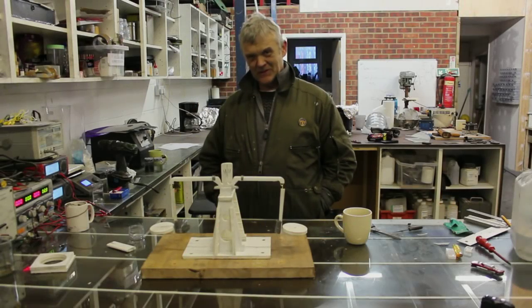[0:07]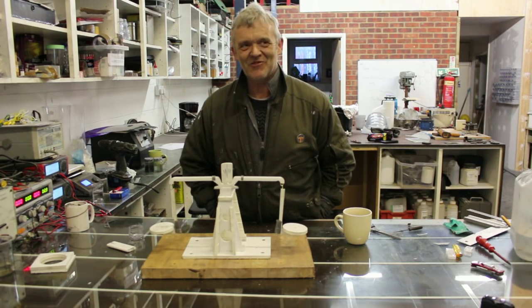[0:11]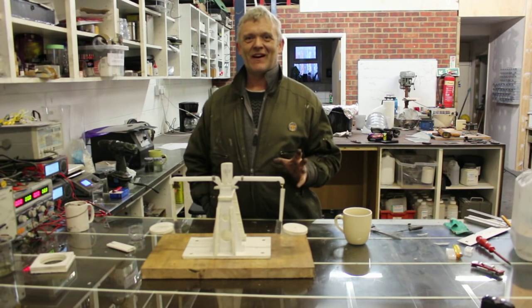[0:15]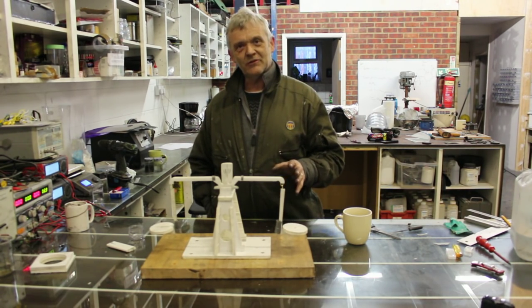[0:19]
Hi, so this was inspired by my friend Pete. Now, he's an Australian and he's a real problem solver. Actually, when I saw this, I was so impressed by it, I thought, hey, we've got to redo that, really. And what he did was get a couple of cups and tie them onto a bit of string. And don't knock it, it worked.
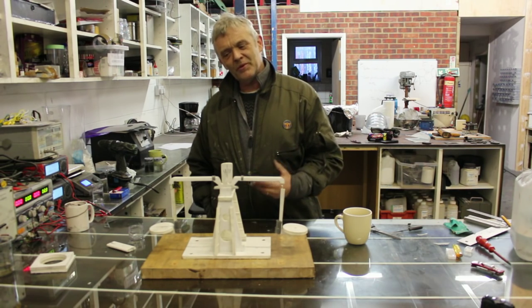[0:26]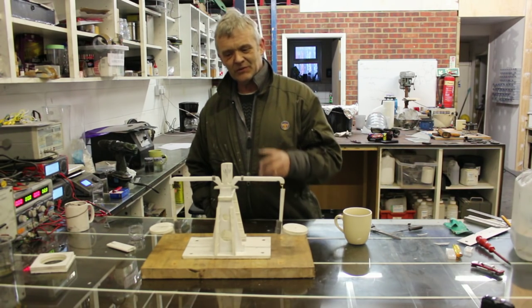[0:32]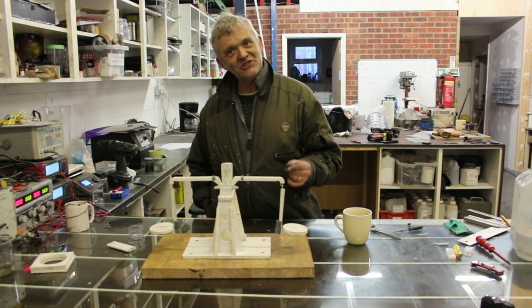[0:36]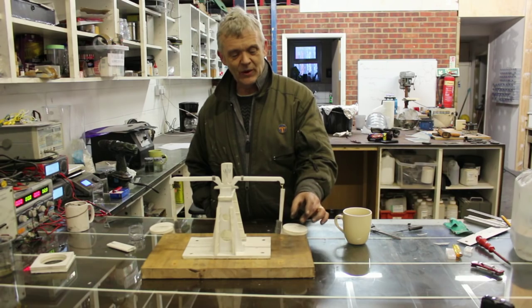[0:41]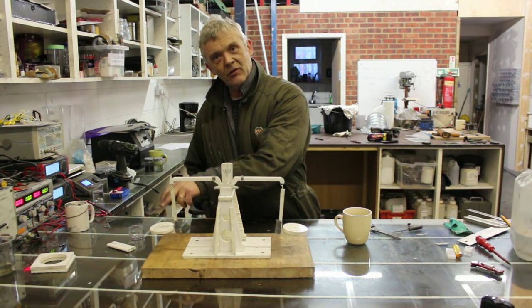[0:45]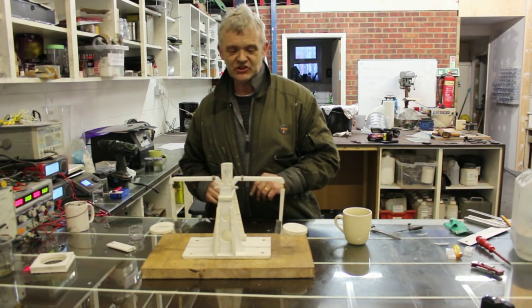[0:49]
And I thought, what would be nice with that is if we made something a bit sturdier and a bit more long-lived and a bit more lab equipment. So what we've got here is actually a balance, and it's really good for measuring small weights. Now, what you do, obviously, is put your known weight here, and you measure out your unknown weight until the two balance, and then it swings back into this middle position.
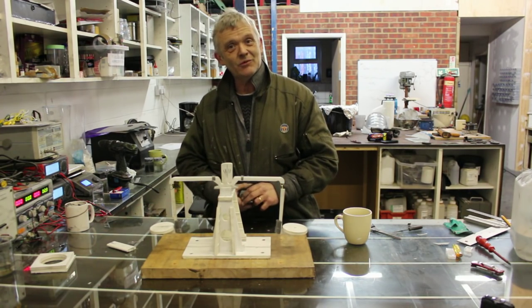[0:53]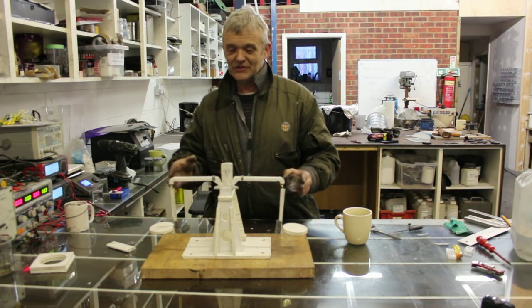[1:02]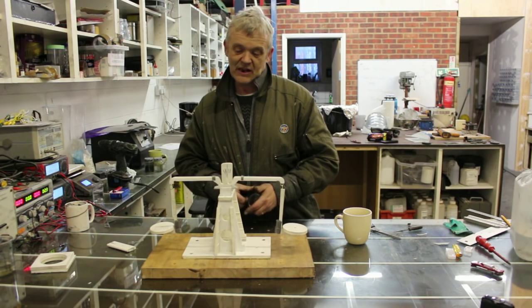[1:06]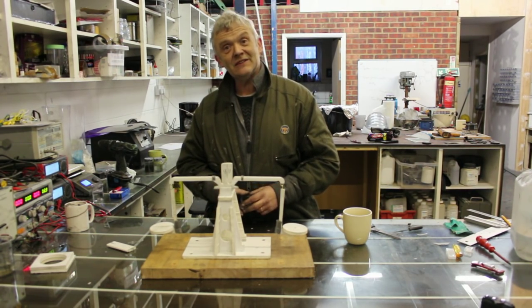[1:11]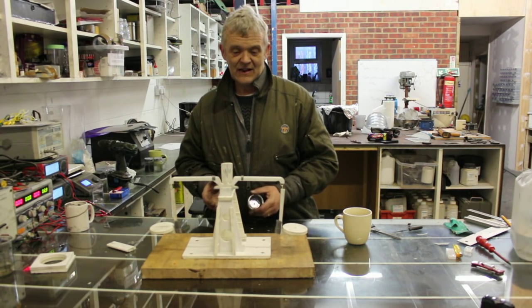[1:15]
Now, what he used, and I thought it was amazingly clever, was water. Because, of course, water is really 1 gram per milliliter. So you can measure down to tiny, tiny amounts using something like a balance. Now, this is quite large. It'll measure probably 50 grams or so. Accuracy, my guess, is 0.1 gram, plus or minus, something round about there.
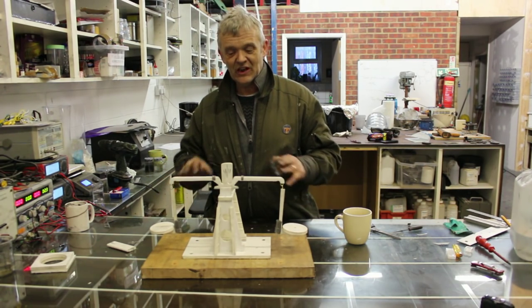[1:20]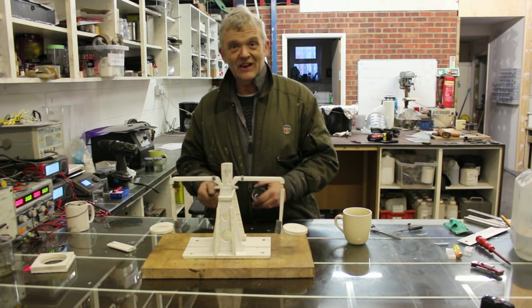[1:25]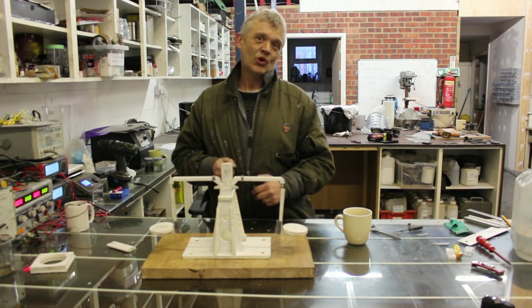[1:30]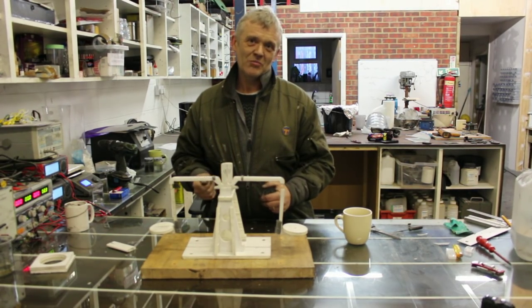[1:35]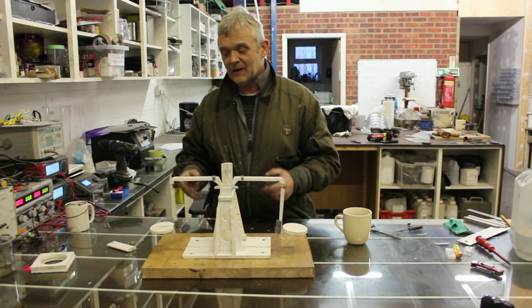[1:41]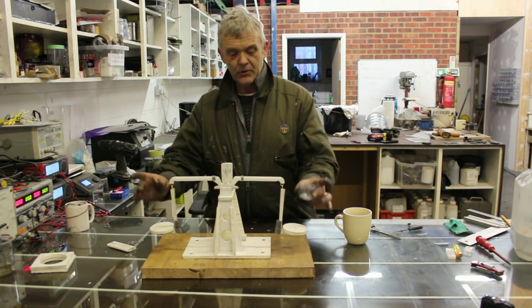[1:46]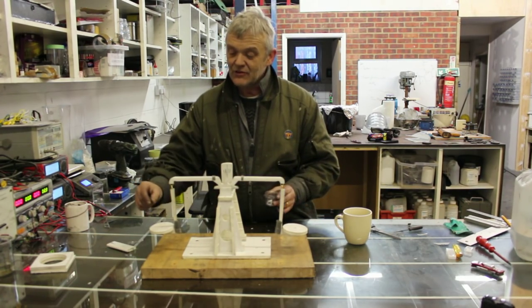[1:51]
So I constructed this, and we're going to go through the rest of the video on how to construct this. It's quite a large one, but you can build smaller ones and more delicate ones to measure tiny, tiny bits. The key bit, and what I'm taking from Pete, is the idea of using water. Water is effectively a known weight by volume, pretty much, good enough for us anyway. And I thought that was such a cool idea that what we could do with it is construct a balance and get a couple of cups of the same, put them on each side, and then when you balance it again and put water in one, you'll have to add your material to the other cup until they balance.
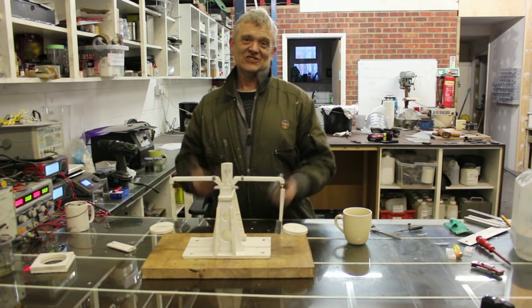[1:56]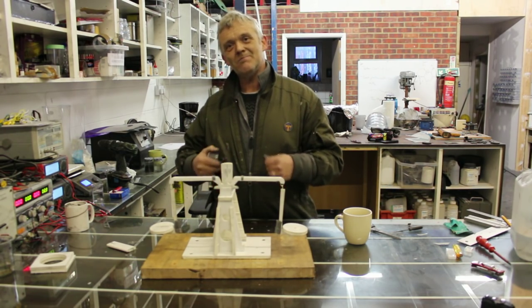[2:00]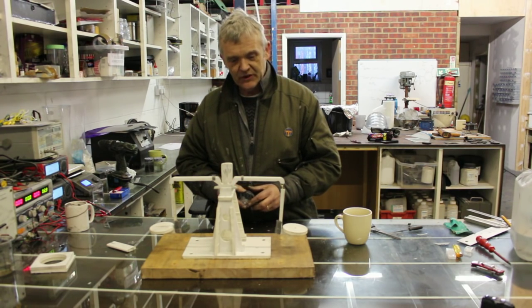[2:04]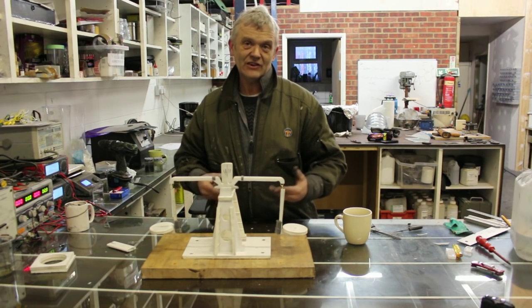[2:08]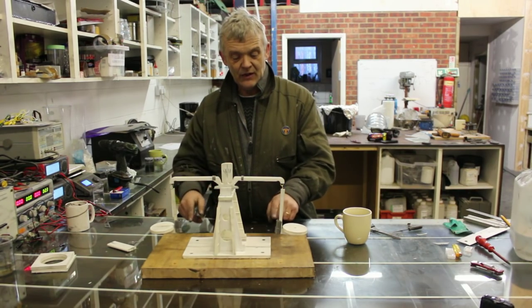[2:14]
And I just thought that was clever, and that we ought to beef it up a little bit into a bit more of lab equipment style stuff. So this is what I made. Now, you'll notice several things about it. These lead weights here, for instance, I used sheet lead, because I've got some. You could use steel, you could use car wheel weights, anything really. They hang here so that these pans, which are going to take the actual weight, swing out and are relatively level, and you just keep adding weight until that happens.
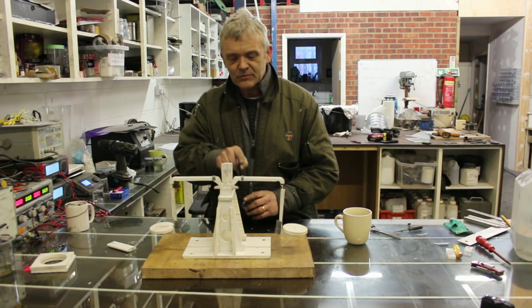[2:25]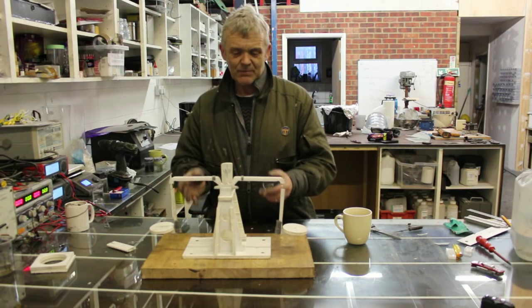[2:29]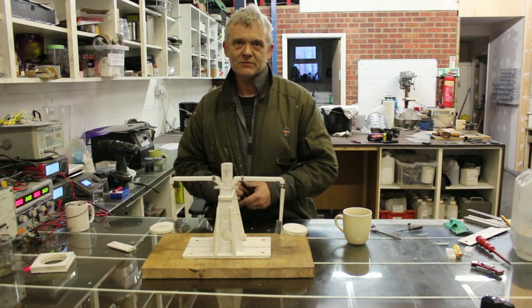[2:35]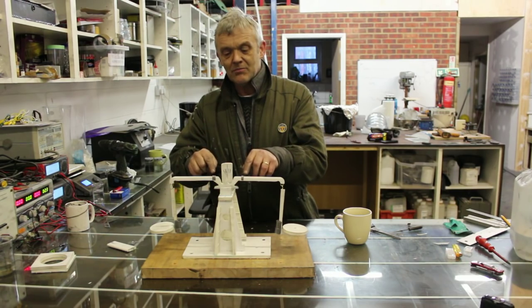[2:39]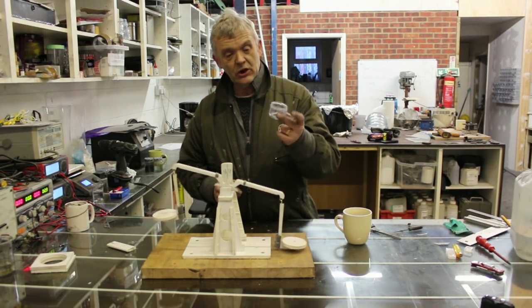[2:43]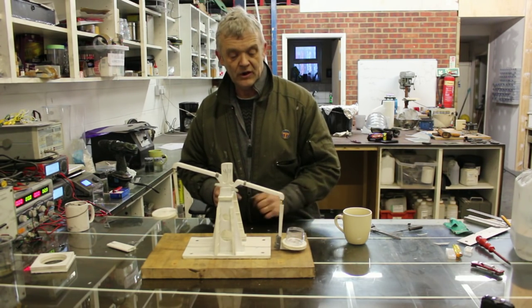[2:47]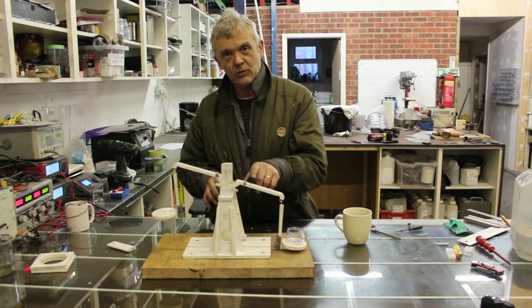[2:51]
You'll notice a couple of little strips of lead here, and that's so that I can balance the balance. When I put the whole thing together, it's unbalanced, so sliding these weights up and down the arms gets you to a point where it's balanced. So when you've balanced the whole thing, then you can either put a pencil mark so you know where to go, or crimp those weights down, because these cups are going to be slightly different weights. So when you put a cup on and you put another cup on there, it's not going to be imbalanced. So sliding those weights will allow you to balance your balance.
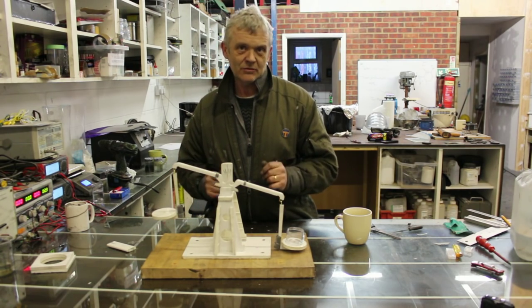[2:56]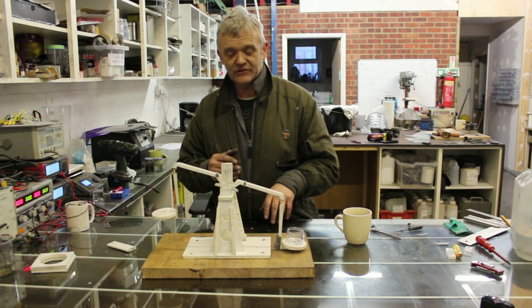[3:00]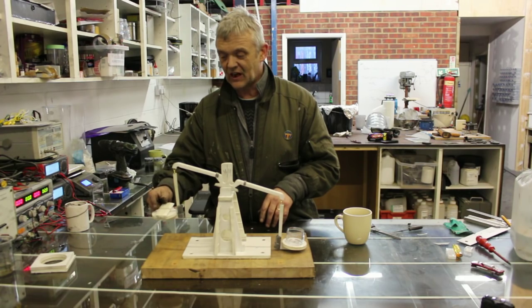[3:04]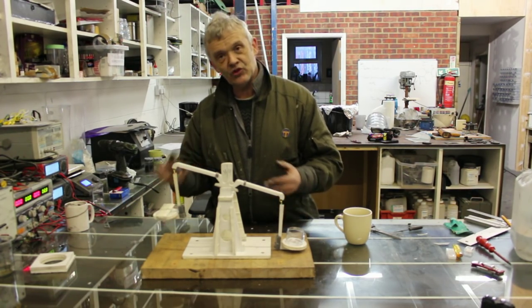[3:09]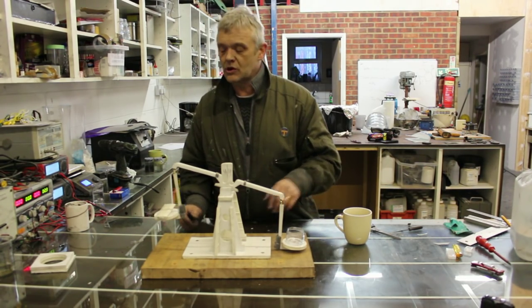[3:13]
Now, it's incredibly sensitive. Any little weight you add on there is going to go out of balance, until you add the appropriate approximate weight on the other side, when it will go back into balance again, and it'll keep doing that until you balance it up. The only trick is having a known weight on one side so you know what the weight of your material is on the other side.
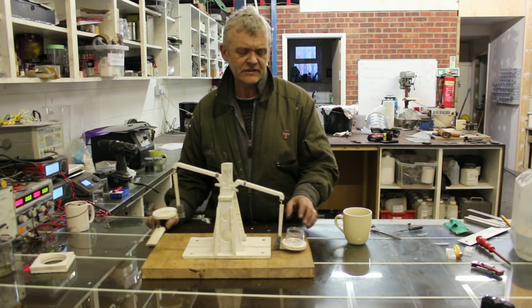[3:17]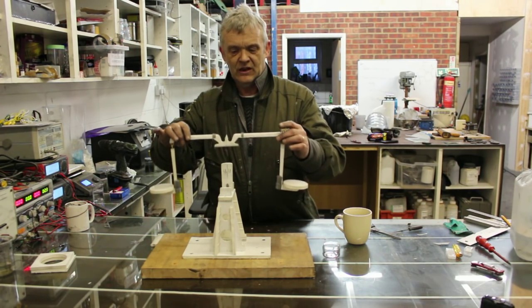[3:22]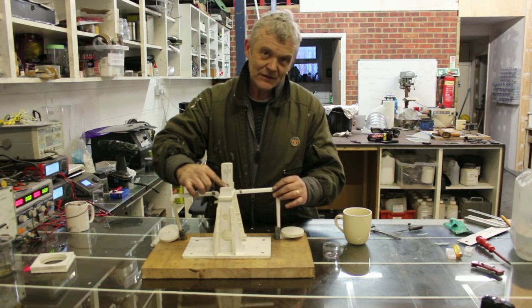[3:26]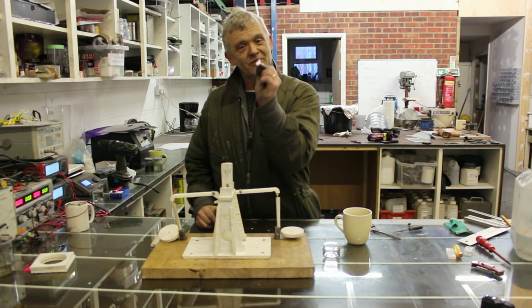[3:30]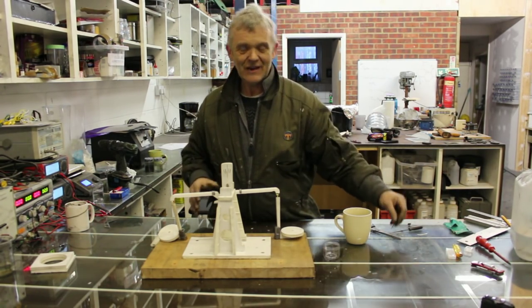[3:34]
Now, it's pretty easy to make, actually. It's made from something called builder's board, which I love. We take off the swinging armature, and here is the balance point. It's actually one of these. So one of these is put that way around, and that's a very fine edge, and the whole balance balances on it. Okay, let's go and make one.
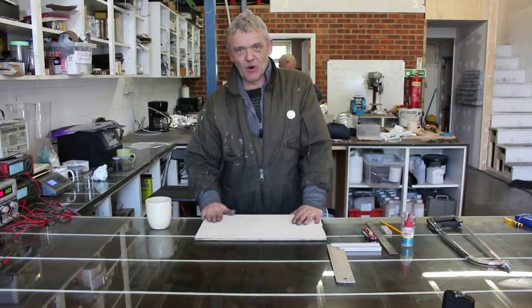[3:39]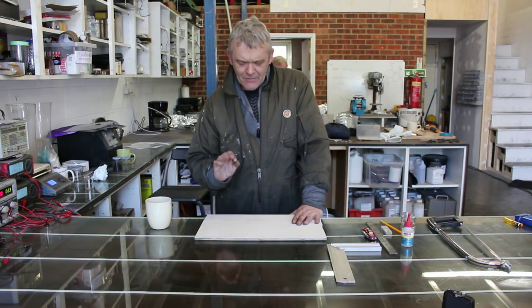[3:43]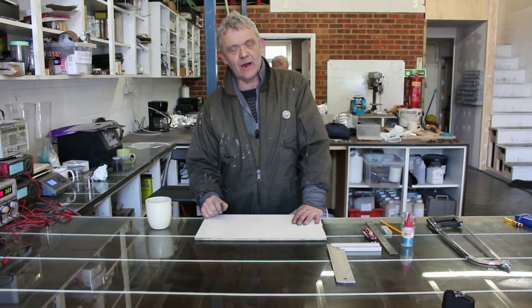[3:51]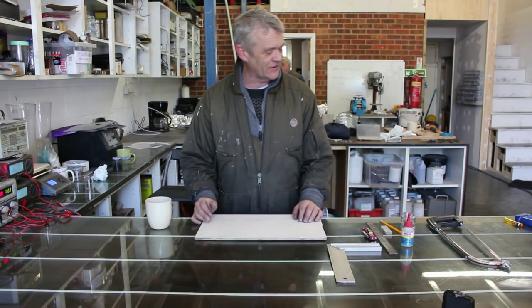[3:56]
So here is the builder's board. Now, I love this stuff. It's PVC with a foam core. And that means it's incredibly dimensionally stable. Do anything with it and it stays the way you made it. Machine made, so a nice square edge here and here, you can use it as a reference square, and it cuts with just about anything. I haven't tried biting it, but I'm willing to bet you can.
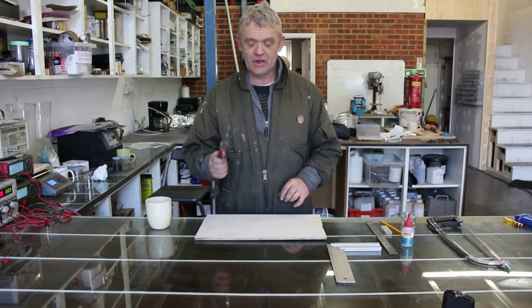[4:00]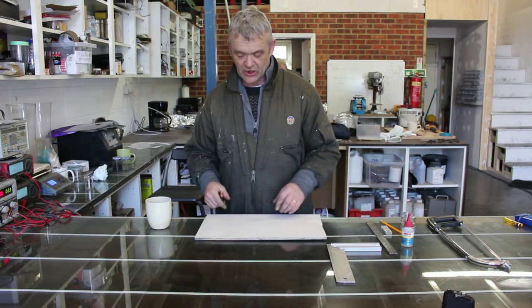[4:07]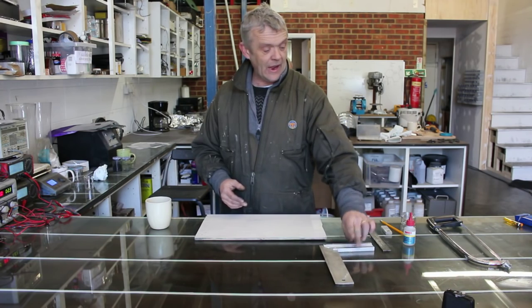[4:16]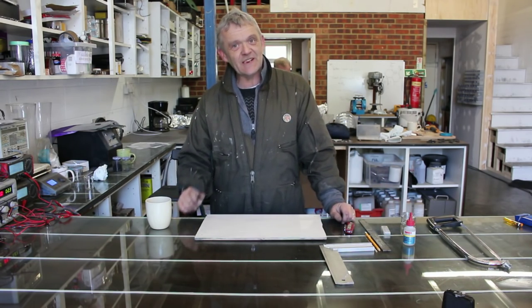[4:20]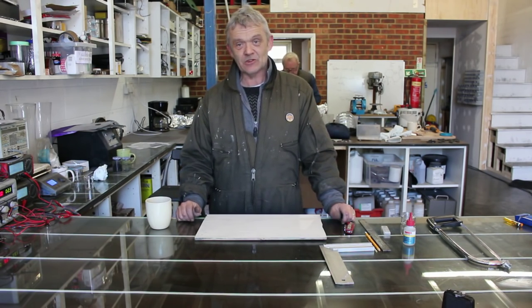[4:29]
But one of the best things to cut it with is this thing, which is just a carpet knife. Cuts beautifully, 3 or 4 scores, it will be through there. You can buy this in a whole range of lengths and widths and thicknesses. This one's quite thin, and it's just an offcut that I had lying around for this project. So all you really need is one of these, a ruler, a square, and a pencil. And you can do it with just those basic tools. It doesn't hurt if you have a few more, like a drill and a hacksaw. Certainly doesn't hurt. Now, the first thing we need to do is to mark out the bits and pieces that we need and to cut them out. And that's what I'm going to do.
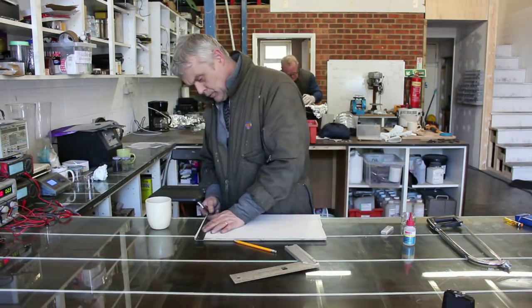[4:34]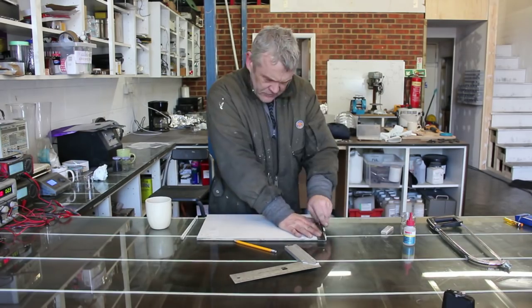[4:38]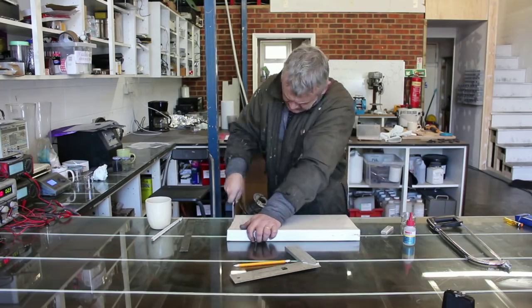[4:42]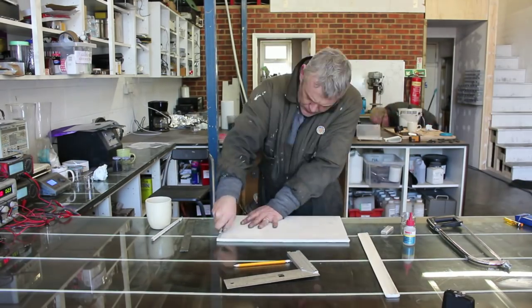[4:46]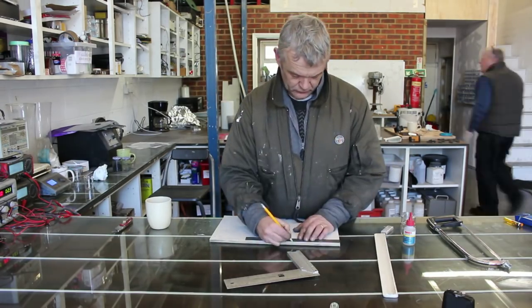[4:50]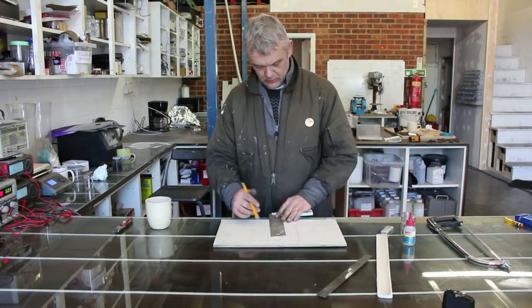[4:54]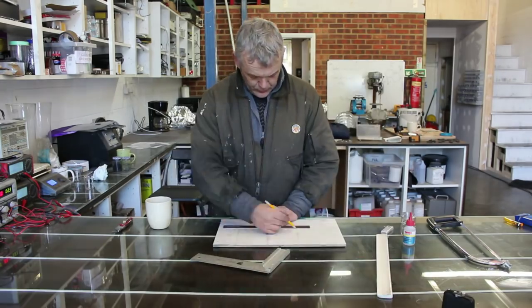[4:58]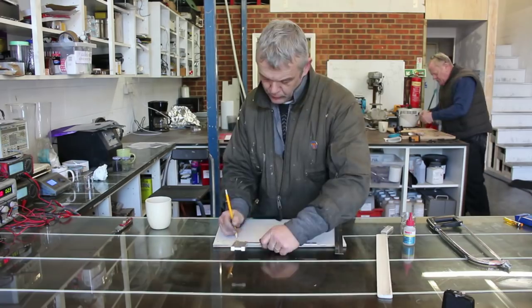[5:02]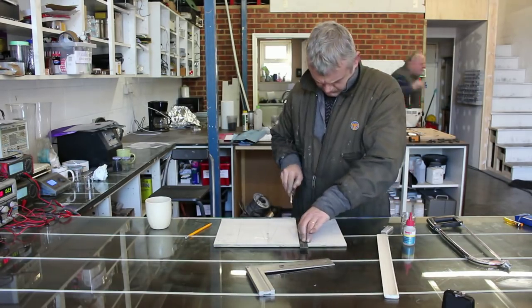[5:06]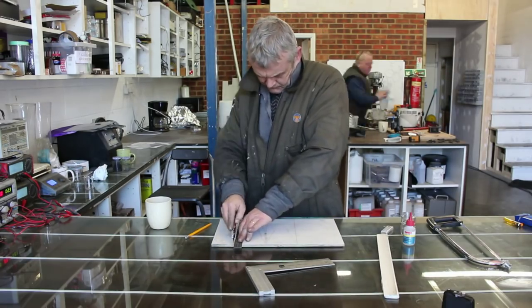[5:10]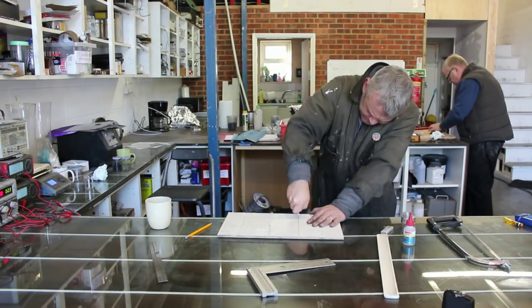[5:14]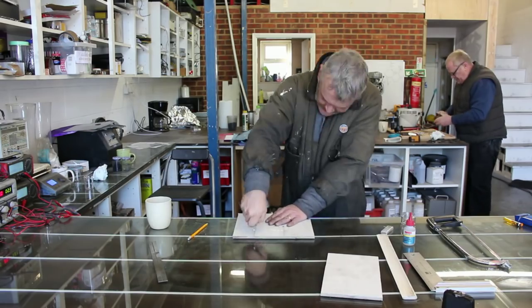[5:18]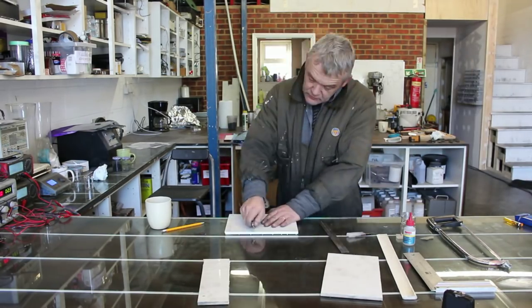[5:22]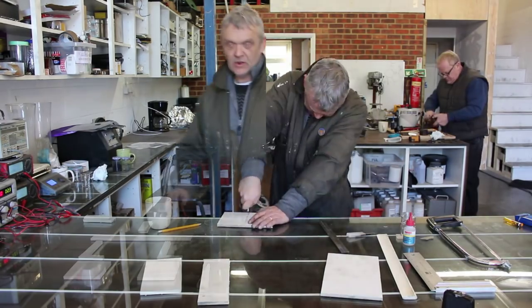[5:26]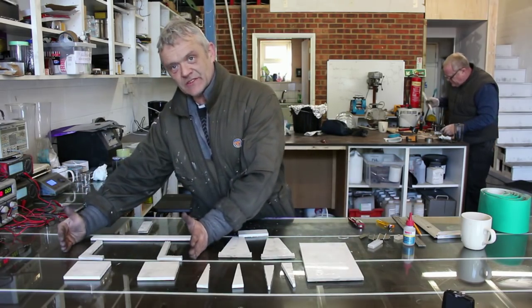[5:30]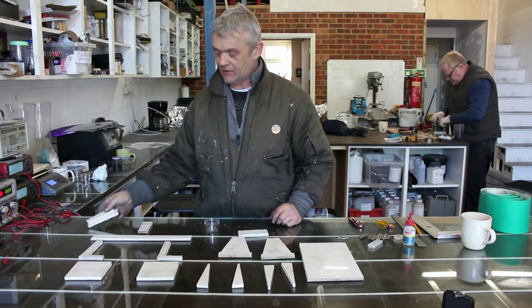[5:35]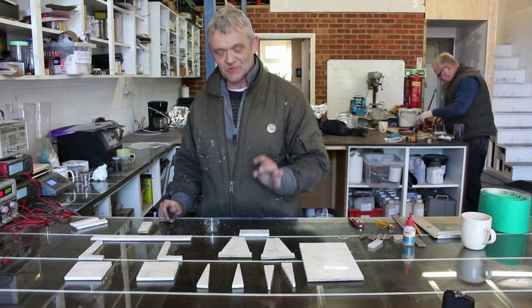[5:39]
There's all the bits cut out. We've got a base unit, and we've got a balance arm with some balance pans and a little indicator here, and this is the scrap we've got left over from it. Now, the other good thing about this stuff is it sands really, really easily. So we can sand all this and make this look pretty, and that's what we're going to do.
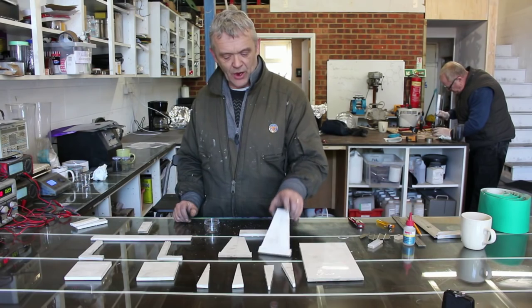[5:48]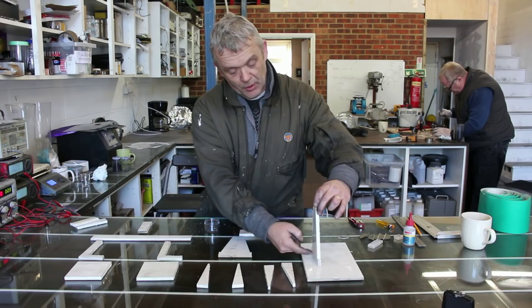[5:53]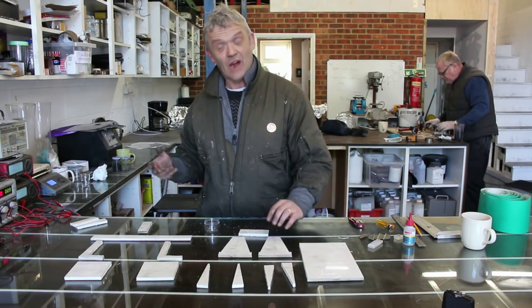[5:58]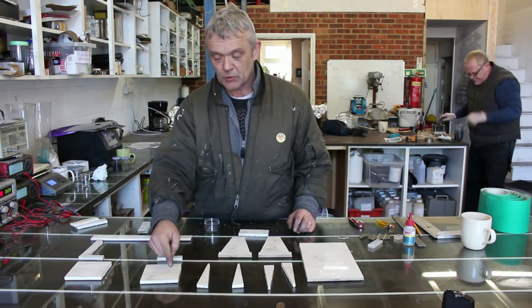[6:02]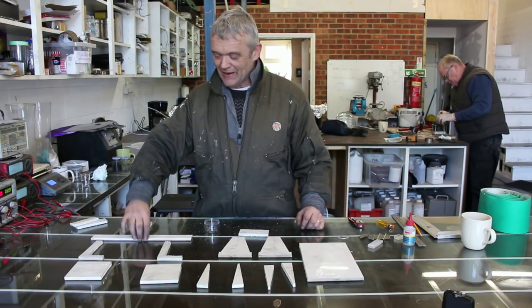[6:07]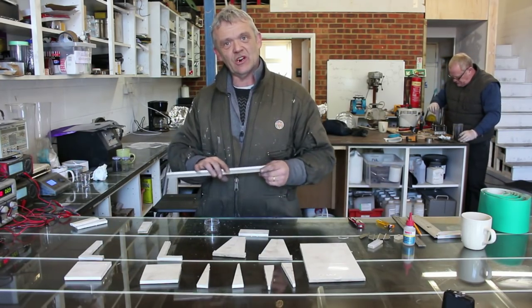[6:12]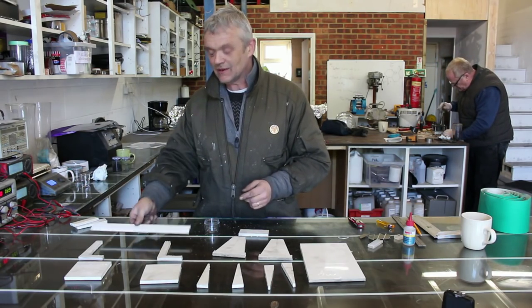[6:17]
We're going to do some little twiddly bits to make it look pretty. For instance, these uprights here, they'll go there and take the balance beam, but they're solid, so I'll probably cut a little hole in there for no reason other than it makes it look nice. The balance pans are square. Square's not bad, makes no real difference, but what I'll probably do is cut them out as a disc, because I like circles. The balance arm, which goes on the top of here, incidentally, like that, it's a bit thick and chunky. Doesn't really matter, but I'll probably cut out a nice little scroll shape with it to make it pretty, and for no other reason than it makes it pretty.
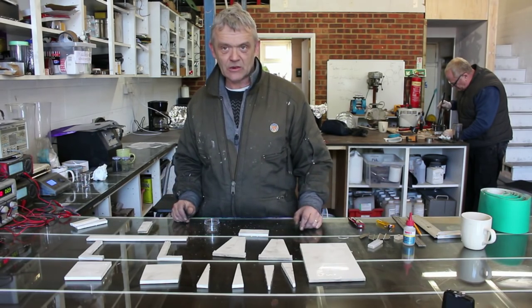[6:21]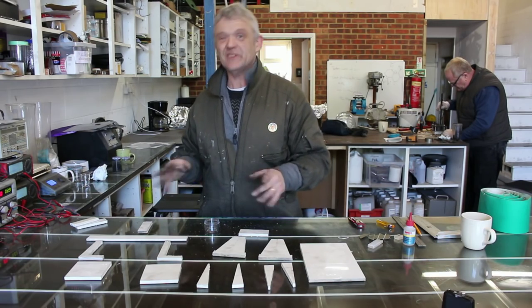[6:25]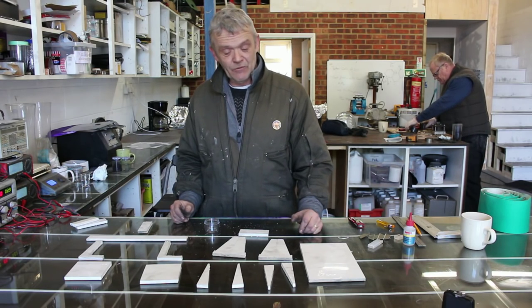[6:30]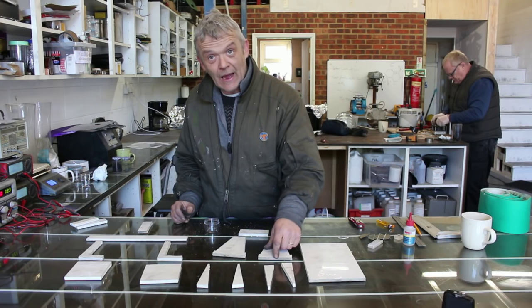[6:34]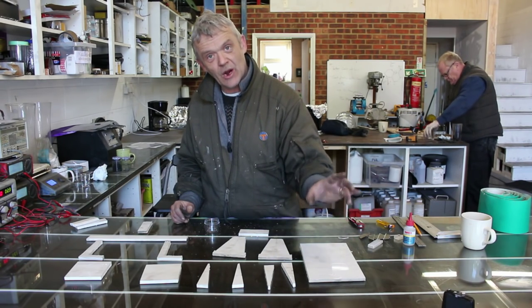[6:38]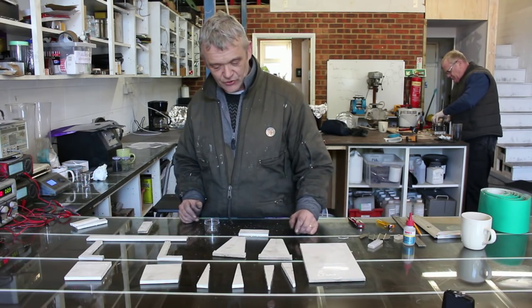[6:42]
So that's what I'm going to do now, is basically sand this, pretty it up a little bit, and when you pretty yours up, just make whatever decisions you want to make about it. And the only thing to remember is not to sand these bits here. These bits are square because we cut them from the square edge, and they're going to go on this square face. So these uprights, because these have been machine squared, are going to be square, so we don't have such a challenge. Anyway, let's get on and sand.
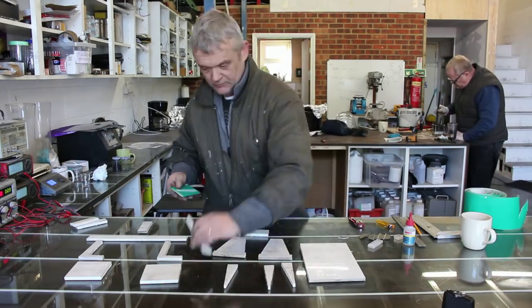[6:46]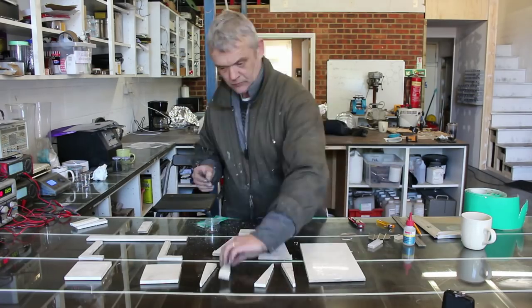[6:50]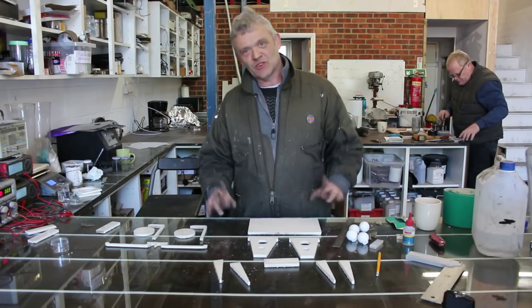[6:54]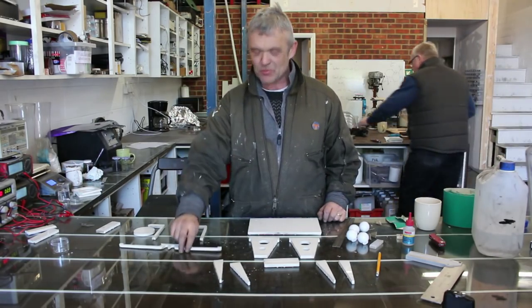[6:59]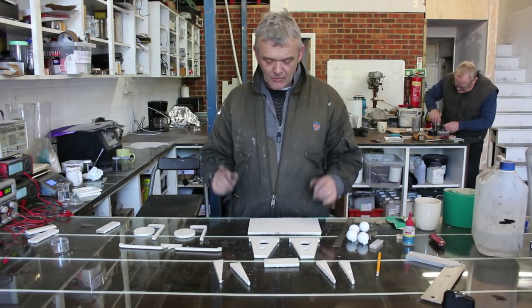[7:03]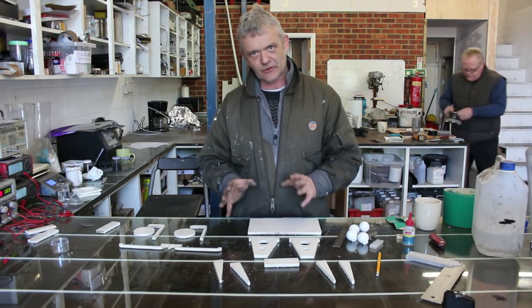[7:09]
That's everything cut out and twiddled up a little bit. You see, I've drilled some holes, I've cut this in a pretty shape, that sort of thing, okay? The only thing left to do really is put it all together. Now remember, we chose one square edge which was manufactured, and these need to be in line with each other, otherwise the balance won't work. So all the measurements are taken from that square edge.
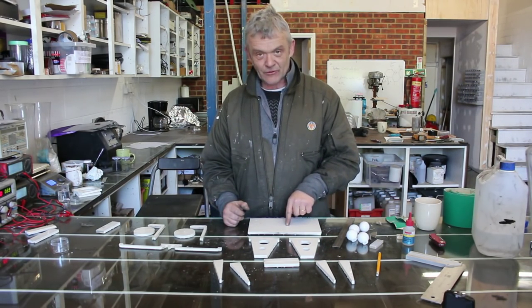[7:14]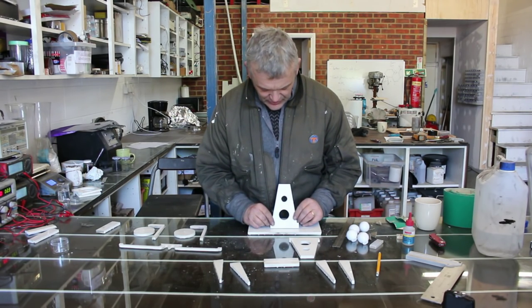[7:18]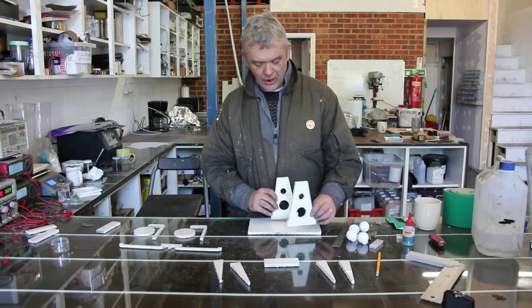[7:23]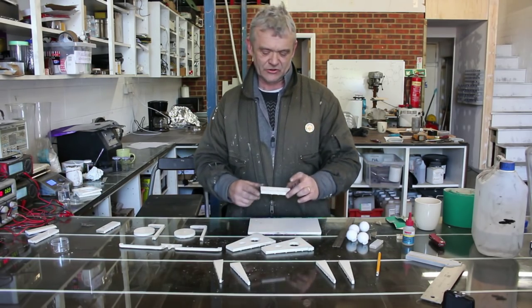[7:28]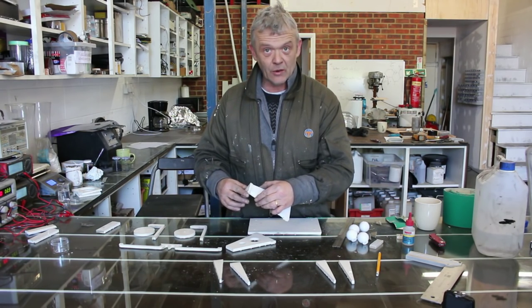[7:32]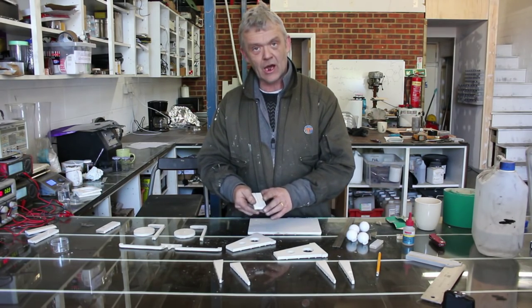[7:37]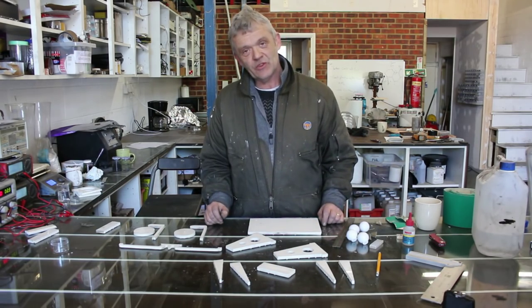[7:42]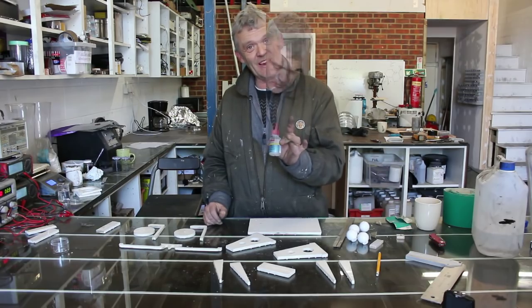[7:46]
So I've made sure I've found the centre, I've made sure that I know that this is the correct distance, it's 3 centimetres, so I can line those centres up and line up those marks. Same with the other one here, and then they'll be in line. And you'll notice two little marks here and here. And the eagle-eyed amongst you will have noticed this bit. This bit goes so that that mark and that mark line up, so that this cut here that I put in this overcarriage is in line, and that'll become obvious in a minute why. So the only thing left to do really is to glue the whole thing together, and like I say, it glues with this stuff. So let's get gluing.
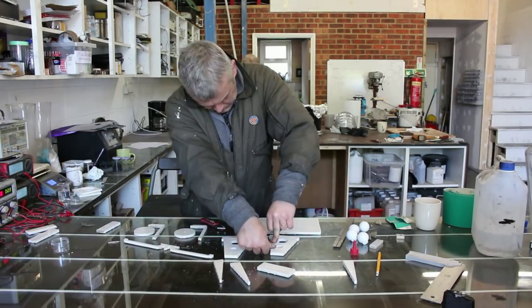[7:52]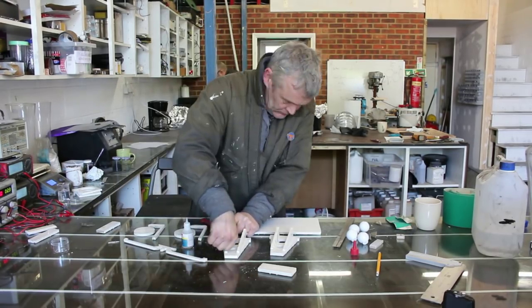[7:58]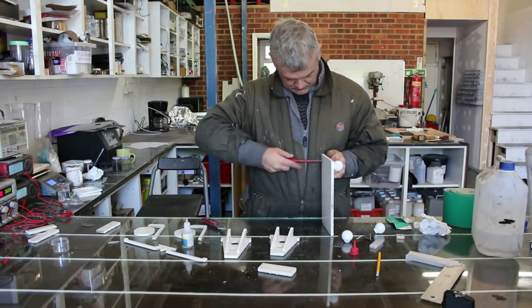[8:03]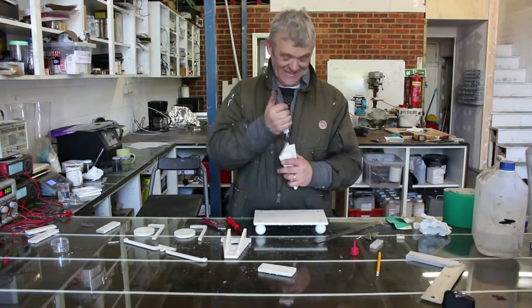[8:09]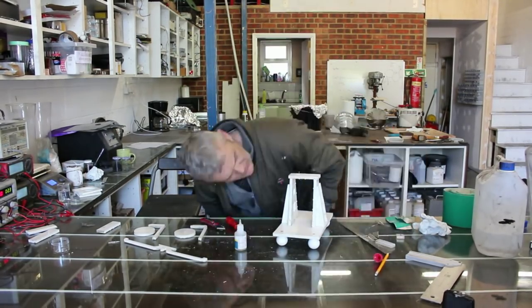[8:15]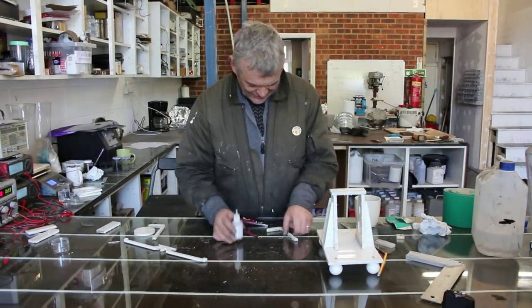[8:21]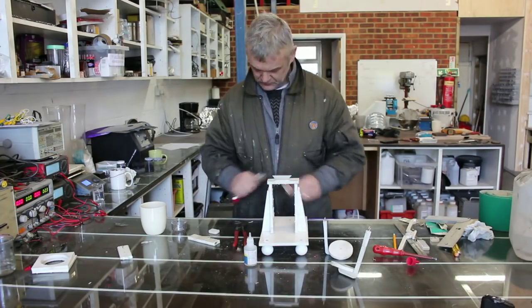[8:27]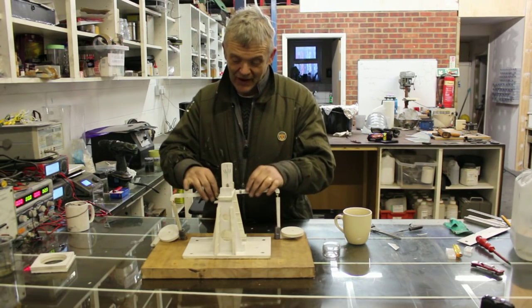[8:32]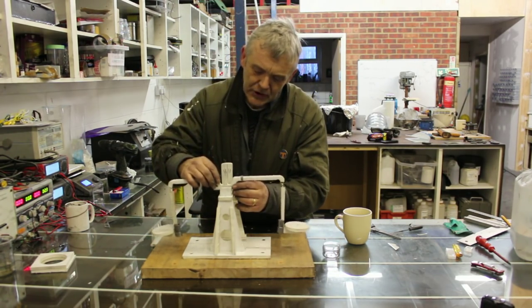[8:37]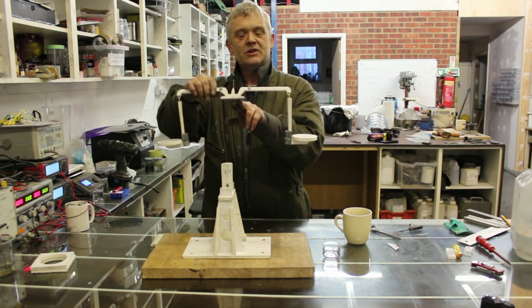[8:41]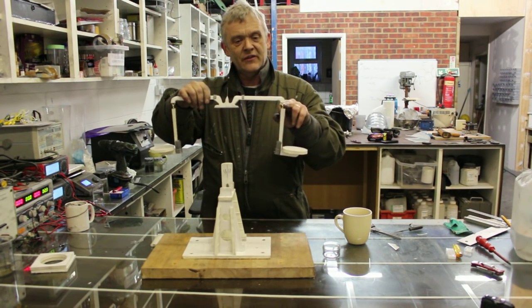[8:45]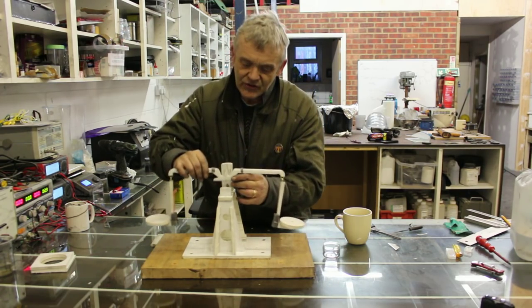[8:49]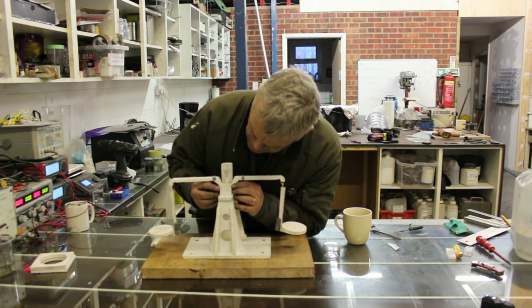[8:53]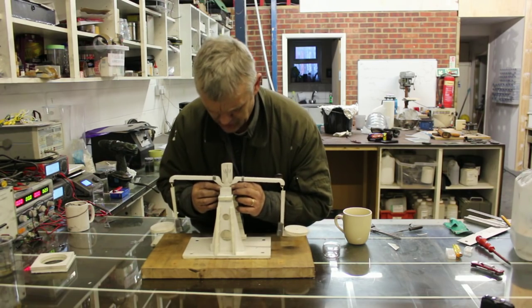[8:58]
So that's the whole thing made, and now in order to balance your balance, all you actually do is put it onto the shoe. Oh, incidentally, a couple of other things. I put a little aluminium shoe on there and put a notch in the shoe with a triangular file, and these are just hooks and eyes, and I've crimped these lead weights on. You can use anything really, bits of steel, something like that. In the middle of that shoe, I've put a pencil mark so I know where the line is. There we go. Where the line is, and now we need to balance it.
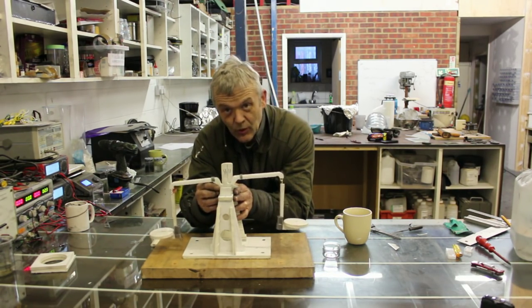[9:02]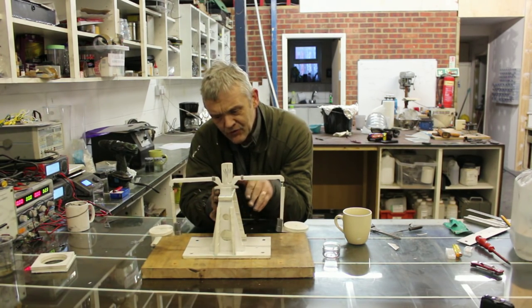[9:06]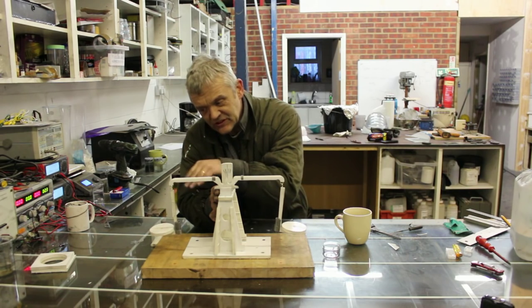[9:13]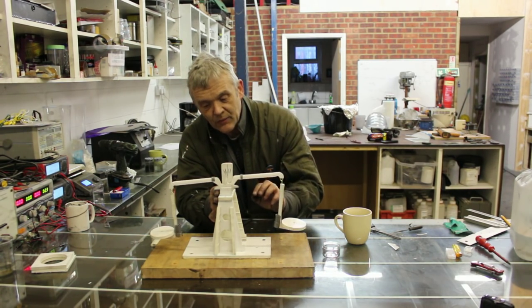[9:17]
It wants to swing that way. You can see it doing it. So if I put my finger in there and just balance it, and if it won't balance, I slide that little weight. So it's falling this way. The weight needs to slide that way by a small amount. And then when you've got it balanced, you'll feel it.
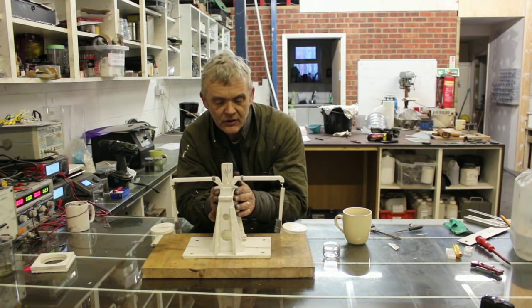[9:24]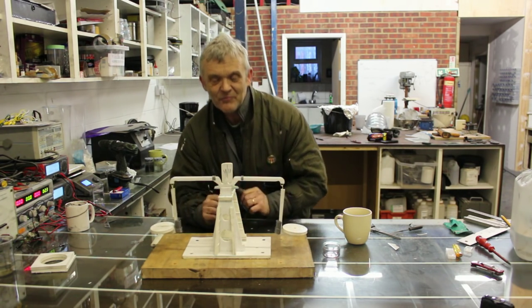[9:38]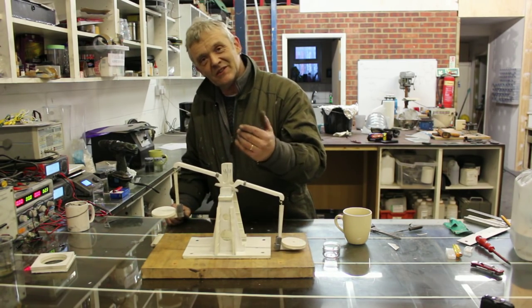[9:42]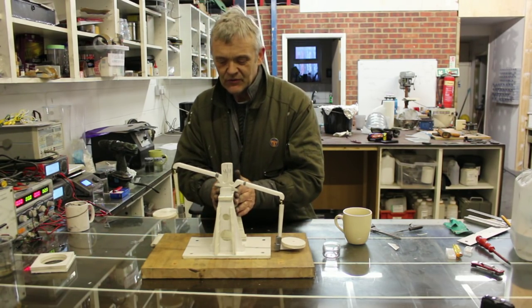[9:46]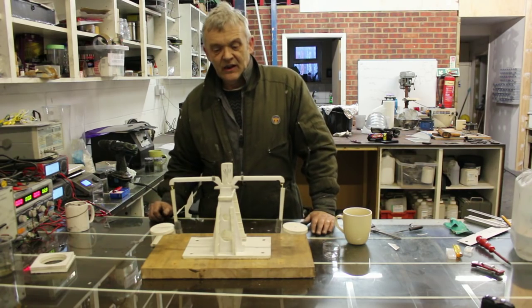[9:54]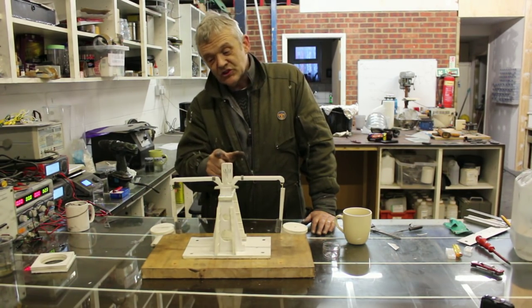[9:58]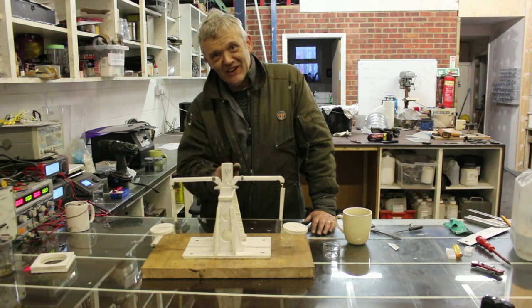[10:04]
And I put this board in the middle with some pencil lines on to tell me when it's out of balance, and when I'm adding the weight, I can actually get nearer to what I want to do. So when it won't balance like that, that's going to be an error. It's very nearly there. There we go. So I add weight here. The needle here that I put in there will shift that way. To bring it back up, I'll be able to add the weight until I can see the needle moving across those marks and it's in line again.